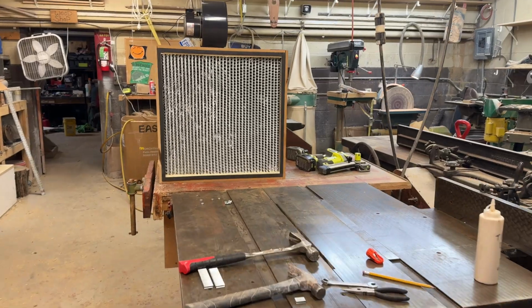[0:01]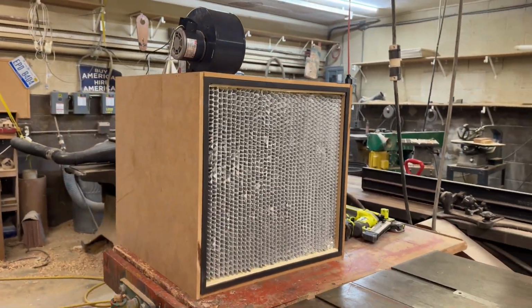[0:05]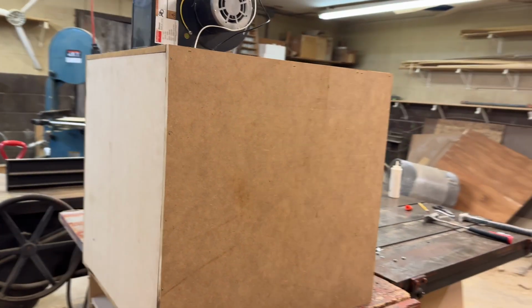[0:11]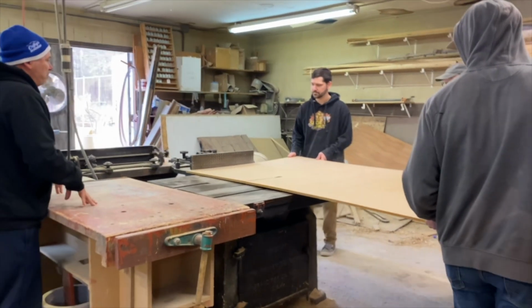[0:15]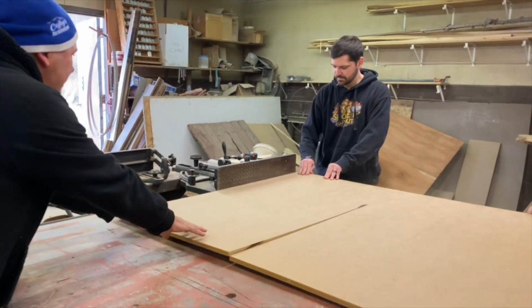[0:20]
In this video, I'm going to show you how to build a laminar flow hood for growing mushrooms. A laminar flow hood is one of the most useful tools you can use in mycology because it prevents contamination of your mushroom cultures.
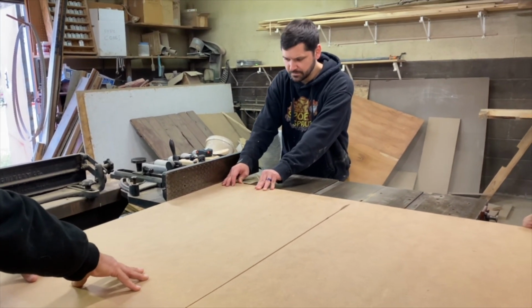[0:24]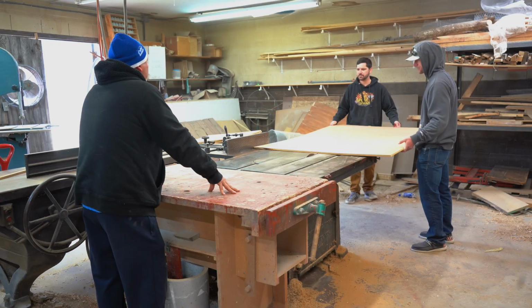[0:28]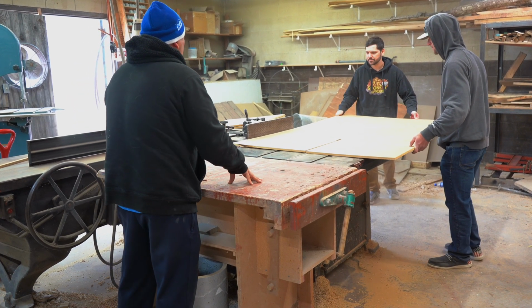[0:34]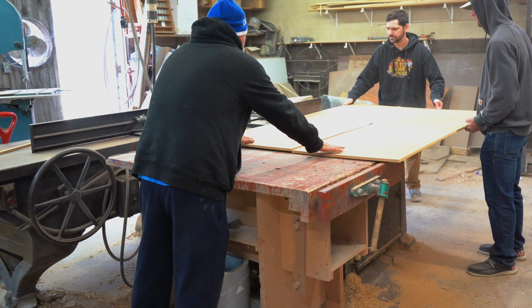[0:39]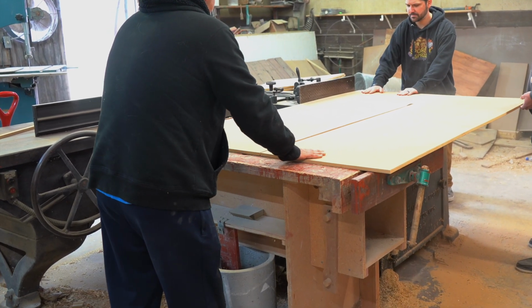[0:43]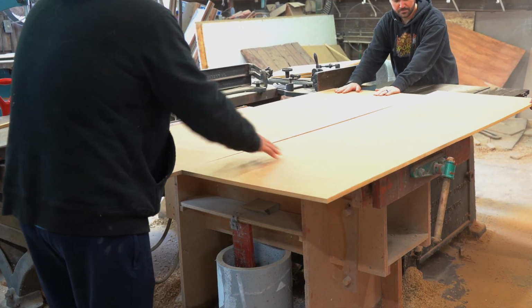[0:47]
The blower motor on top brings air into the box, which is forced through the HEPA filter, creating a stream of sterile air over the working area in front of the flow hood. This laminar flow hood is made up of three main components, which are half-inch sheets of MDF particle board, a HEPA filter, and a compatible blower motor.
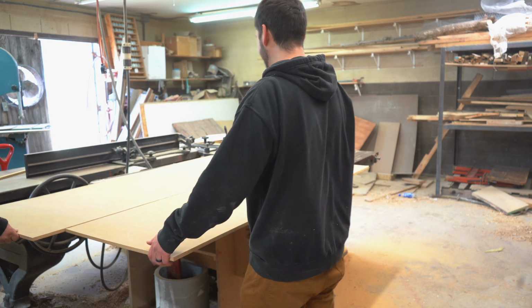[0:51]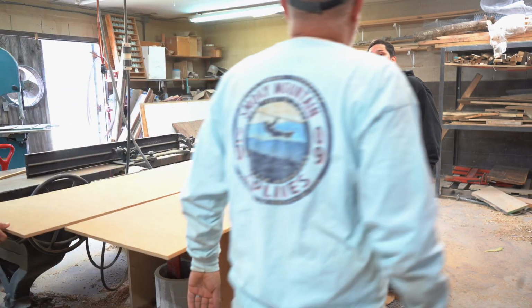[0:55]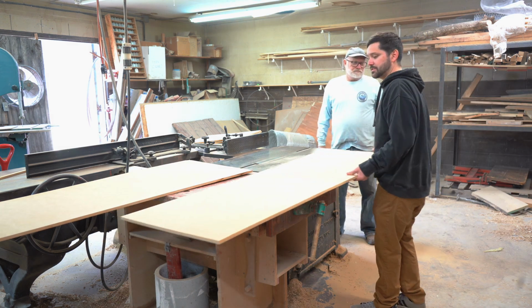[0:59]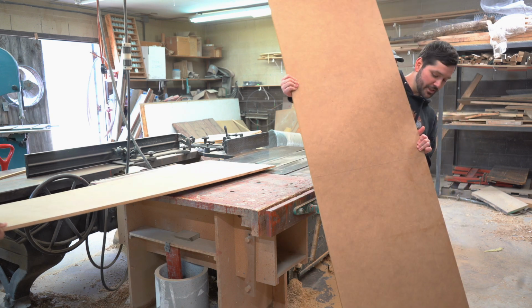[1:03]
Yeah. OSHA would come and give me a... Right. Yeah. I've seen the ones that stop if you put a hot dog there. Yeah, oh yeah. Stop. Yep. Yeah. This is our extra piece here. Yeah. Now you can make whatever you want with this extra.
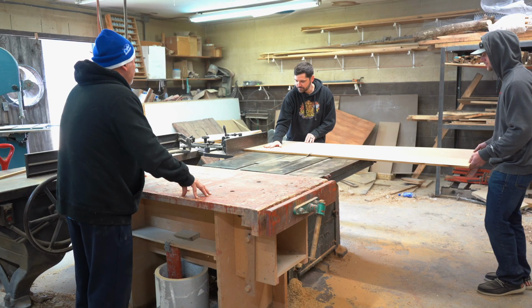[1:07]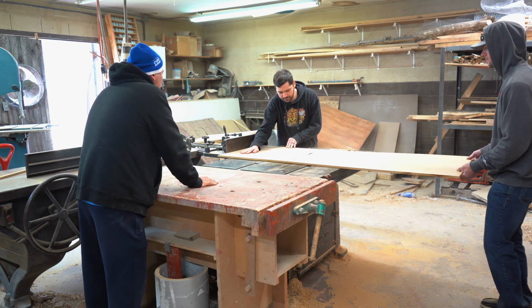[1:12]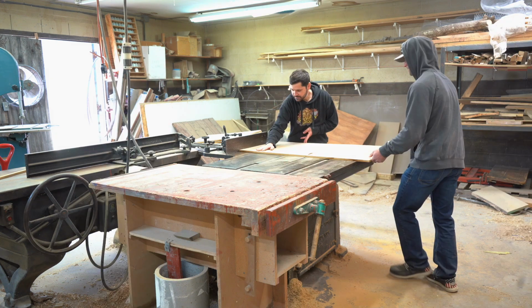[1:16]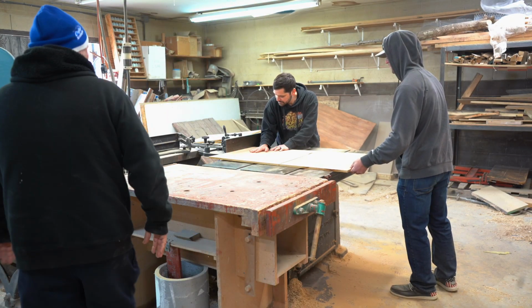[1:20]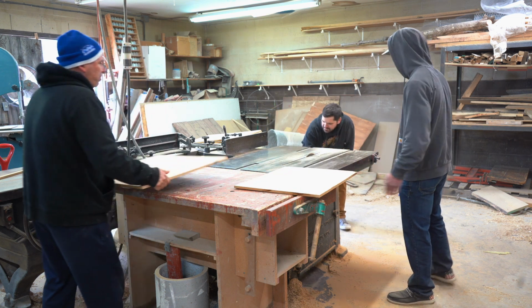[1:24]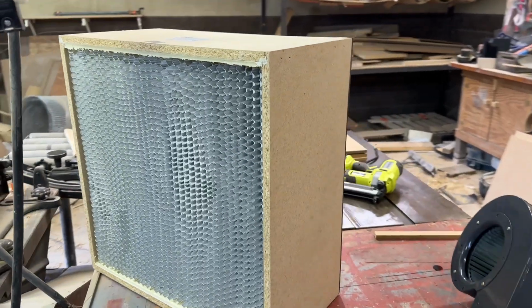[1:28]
You'll need to cut 5 square panels from the MDF, measuring for the two sides. It's the same measurement, which is 25 inches by 25 and a half inches. For the top and bottom piece, they're both the same measurement, which is 25 and a half inches by 24 inches. And then that just leaves the back piece, which is 24 inches by 24 inches.
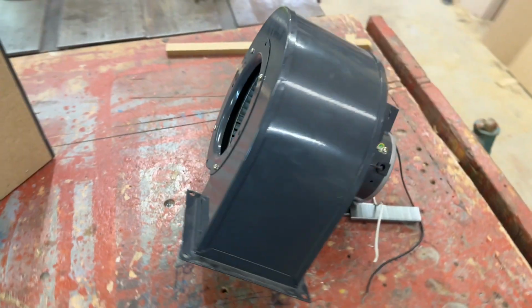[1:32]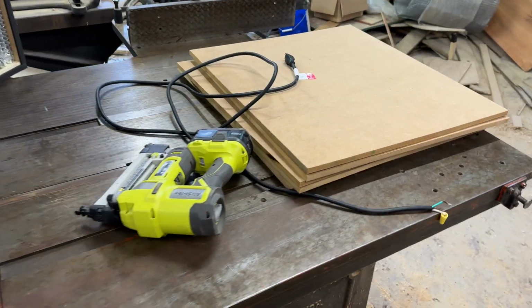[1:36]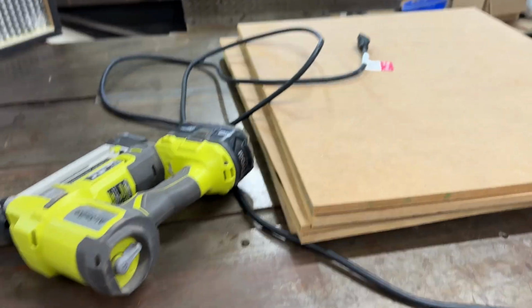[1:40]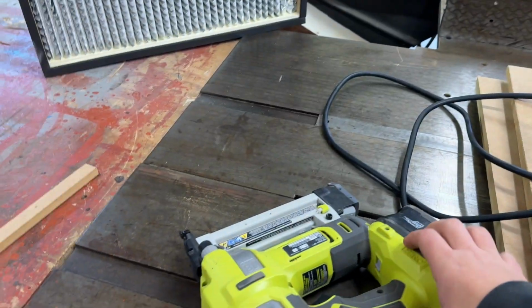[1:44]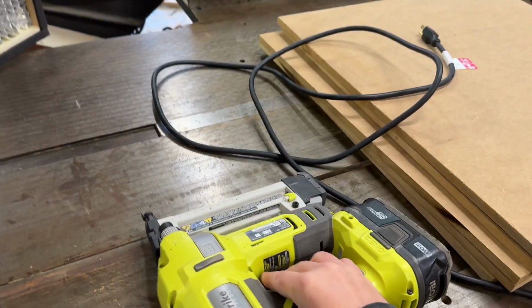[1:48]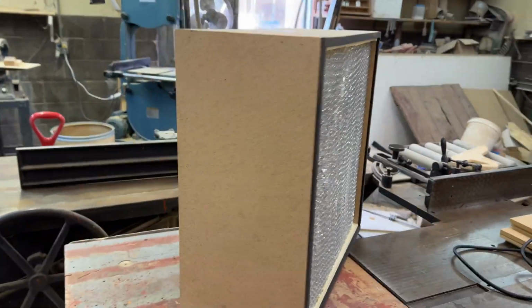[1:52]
I'll leave all the measurements in the description of this video, including the links to the compatible HEPA filter and blower motor. A clean room grade laminar flow hood can cost thousands of dollars, and shipping is usually $300. So making your own flow hood is more affordable, and this build specifically is around $500.
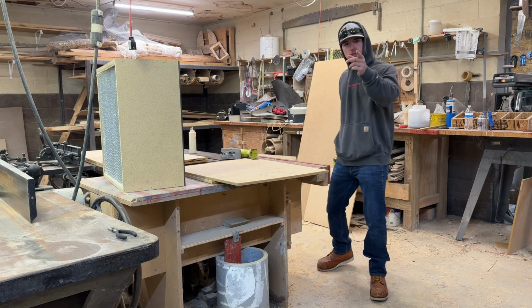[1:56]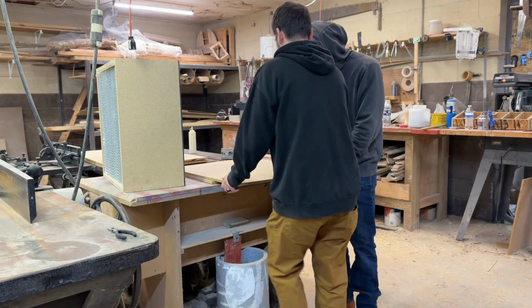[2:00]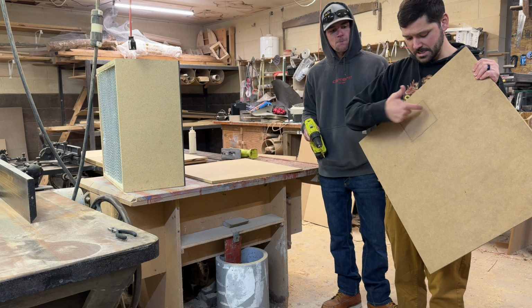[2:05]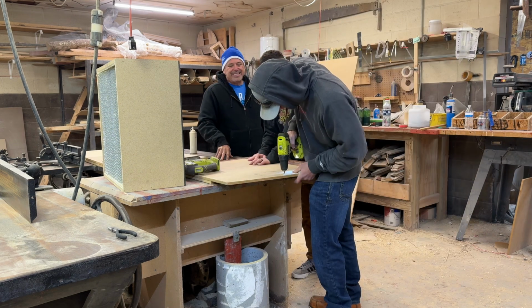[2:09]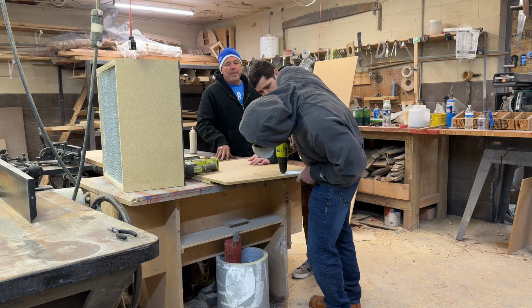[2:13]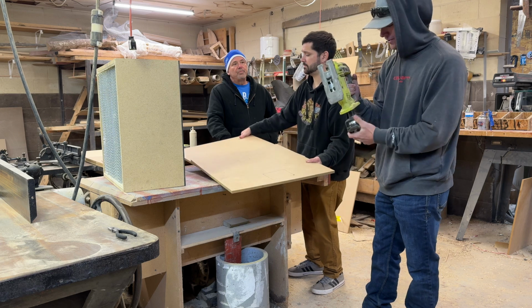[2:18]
All right, guys. So the next step that we're going to be doing here is we're going to cut out this square. So first of all, you're going to make sure this is where the blower motor is going to go. Right here. So we're going to cut this opening out. Okay, so now we're going to be using the jigsaw to go ahead and cut this square open.
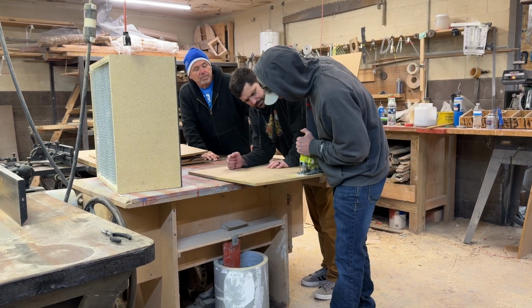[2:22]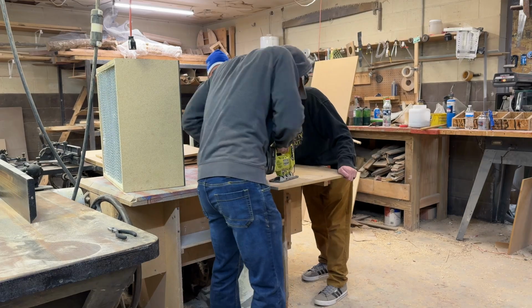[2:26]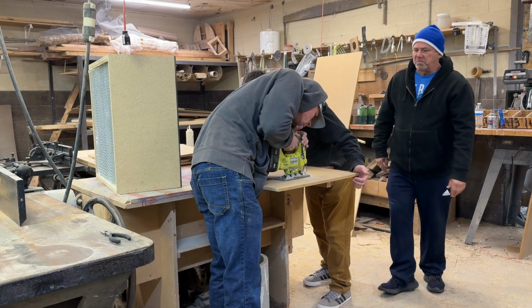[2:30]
I have built this kind of flow hood a few times, and they work amazing for many years without even replacing the filter. The longevity can be increased even more if a pre-filter box is installed around the blower motor on top.
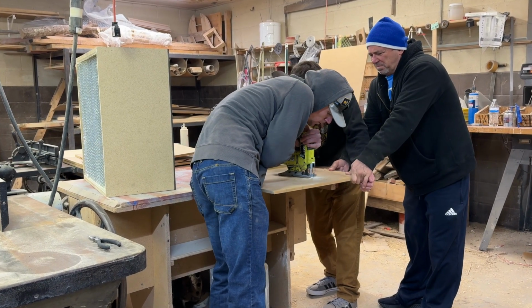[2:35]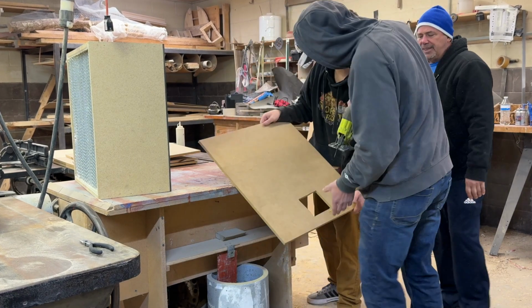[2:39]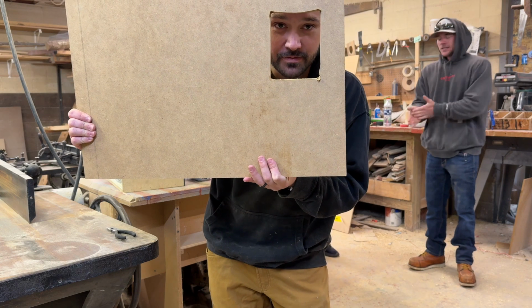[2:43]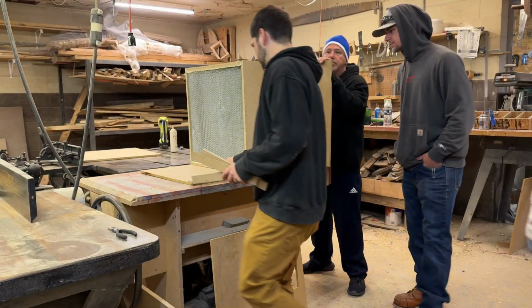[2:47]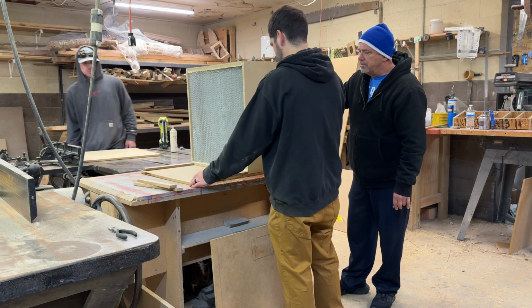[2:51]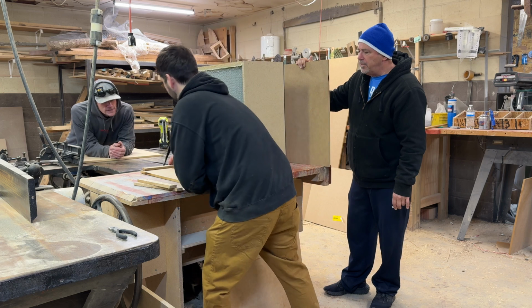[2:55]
All right, what's the next step? We cut it out, folks. One goes right here. Okay, so these shims we're going to put in here so the filter stays in position. So we're putting these shims here.
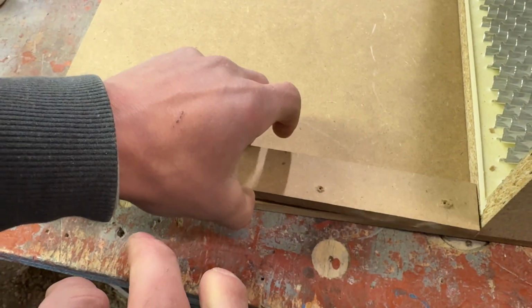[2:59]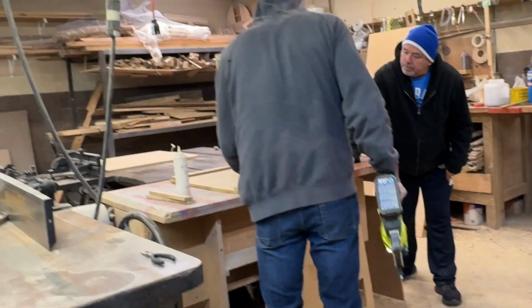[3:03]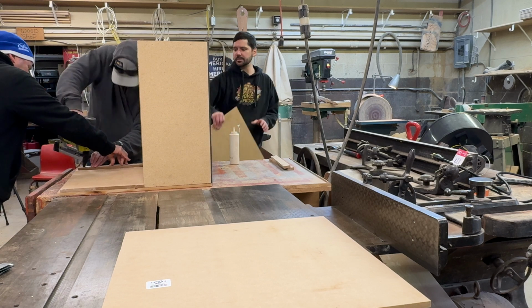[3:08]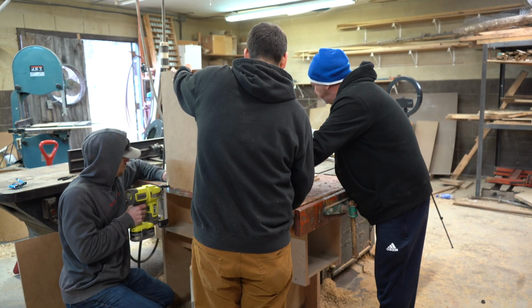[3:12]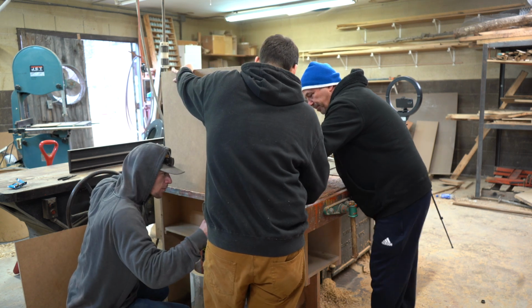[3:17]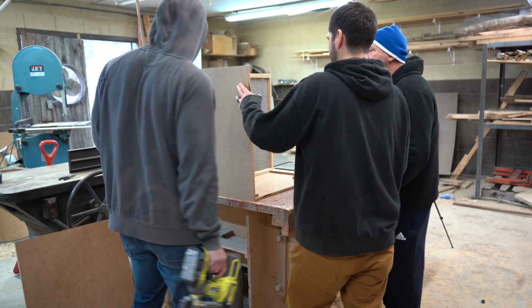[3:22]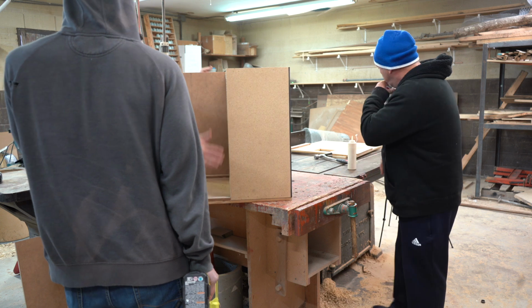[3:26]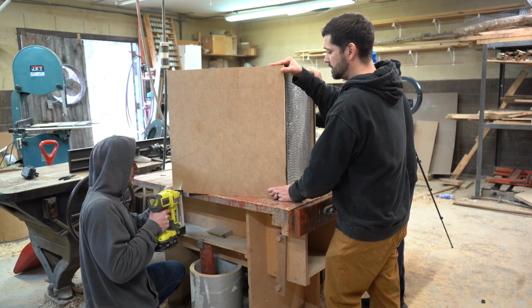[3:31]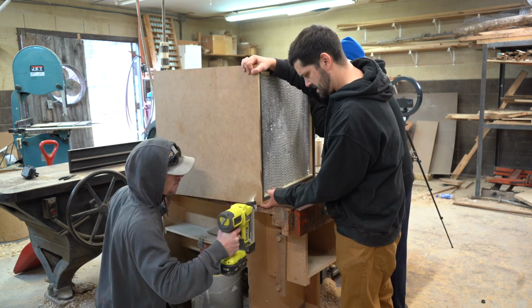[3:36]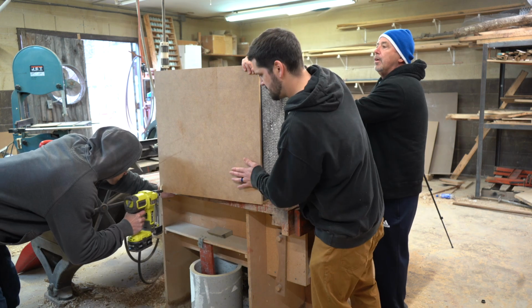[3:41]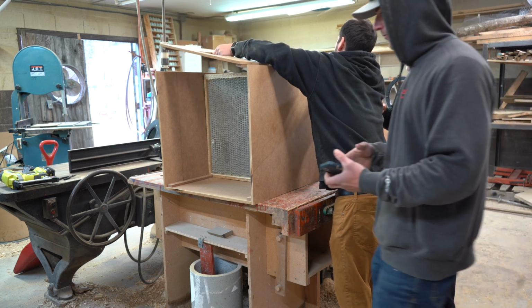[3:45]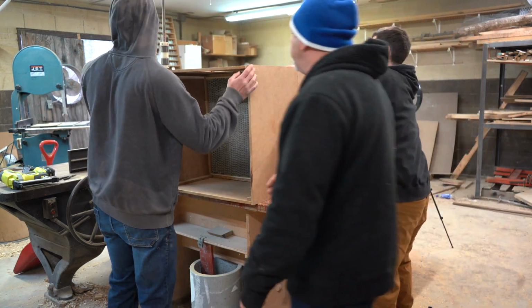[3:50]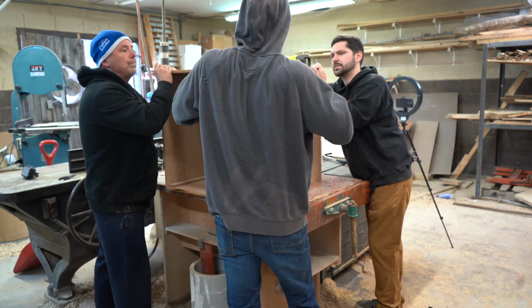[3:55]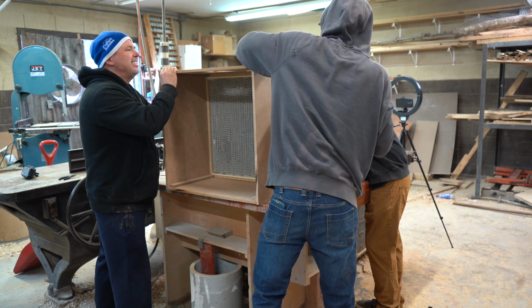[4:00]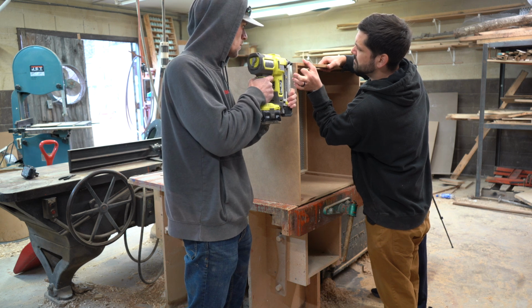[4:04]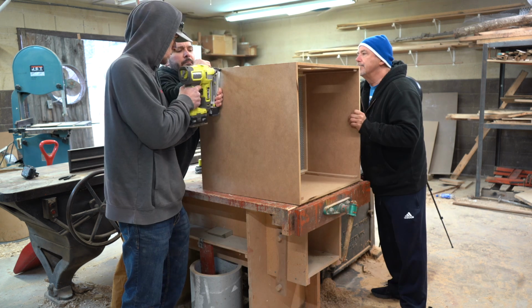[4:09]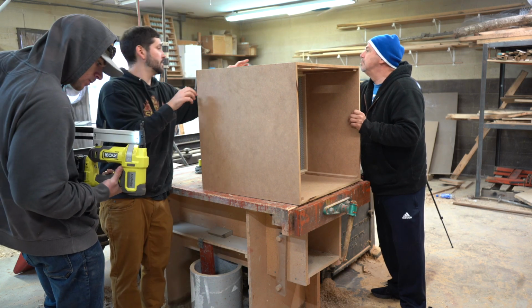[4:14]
After all the pieces are measured and cut out, it's as simple as constructing a box around the HEPA filter. You can use an air nailer or a drill with screws to attach the panels together. Alright, now just spin it around. We'll do this side. And any gaps we'll just have to fill up with some silicone.
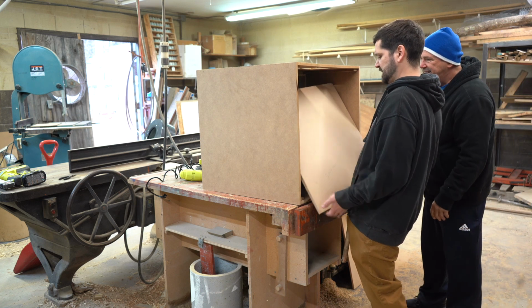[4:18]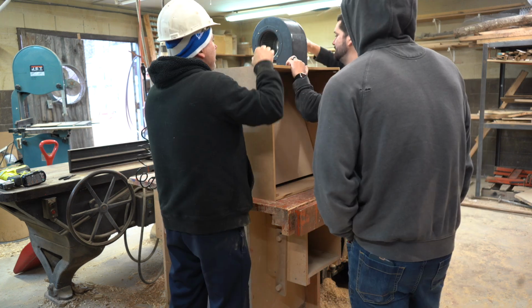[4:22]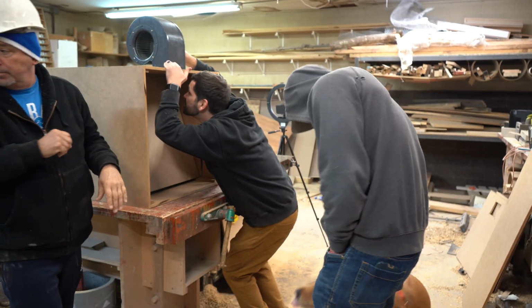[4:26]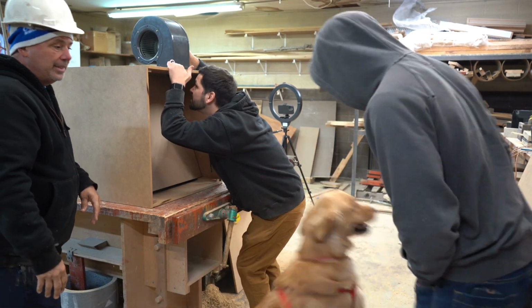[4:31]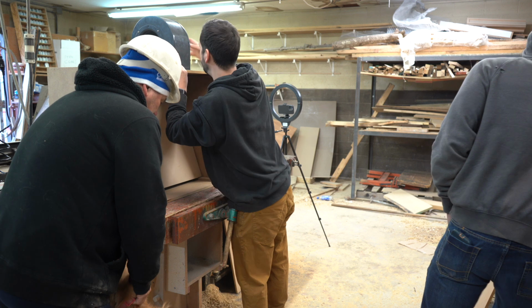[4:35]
Where was she? I don't know. Do you have a pen or something we can mark that with? Yeah. Can you do that, please?
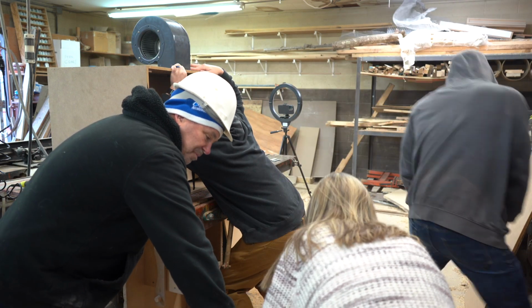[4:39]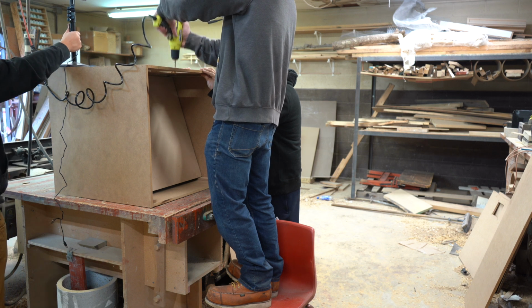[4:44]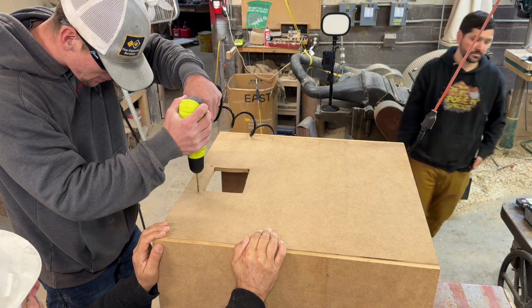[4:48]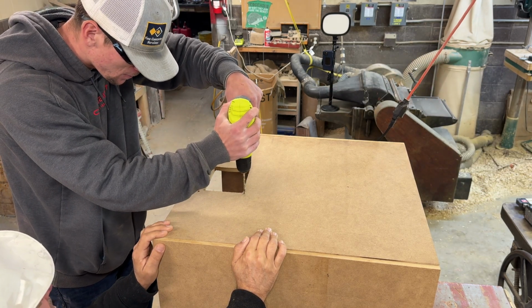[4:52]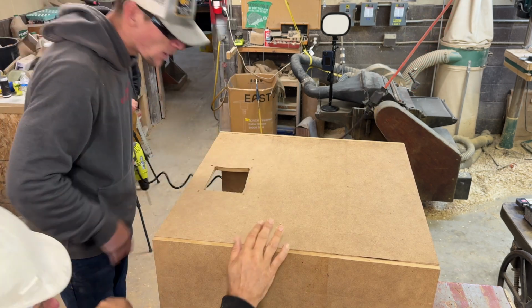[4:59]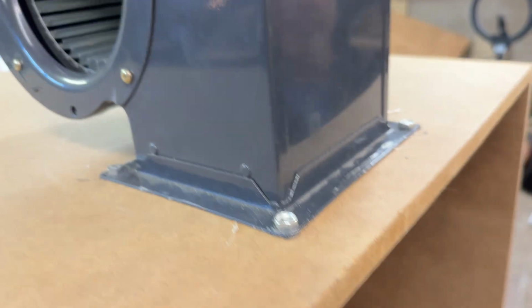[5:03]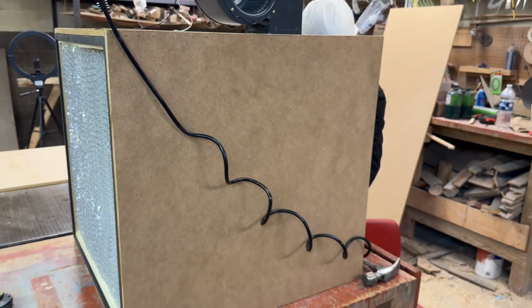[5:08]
Here we're marking and drilling 4 holes around the outside of that rectangle that we cut out earlier, where the blower motor will be held into position by 4 bolts. Okay, you're good to go then. After attaching the blower motor, I recommend running a bead of silicone around the flange to make sure that it's airtight.
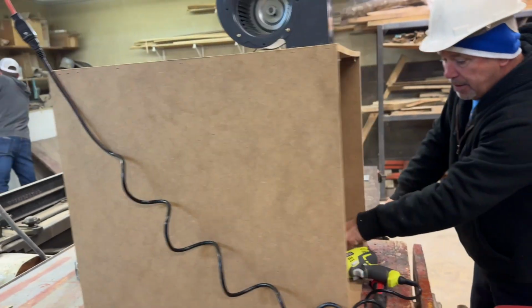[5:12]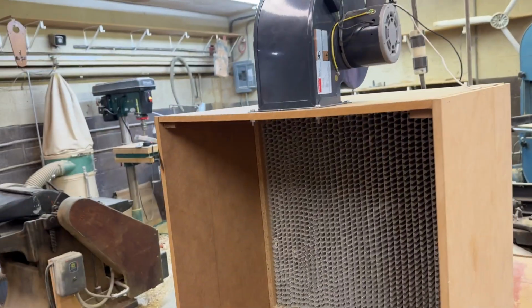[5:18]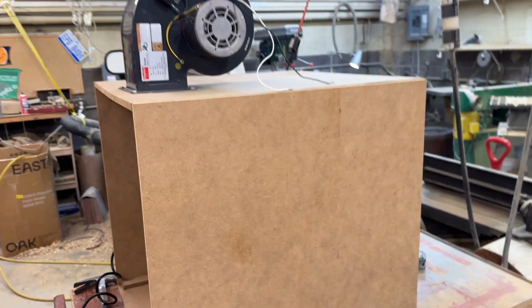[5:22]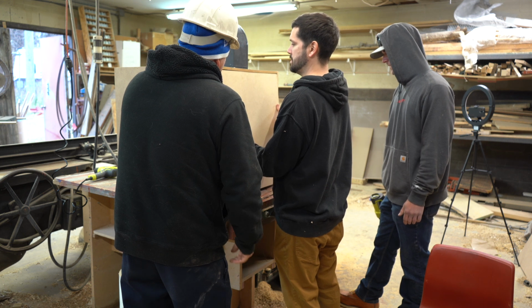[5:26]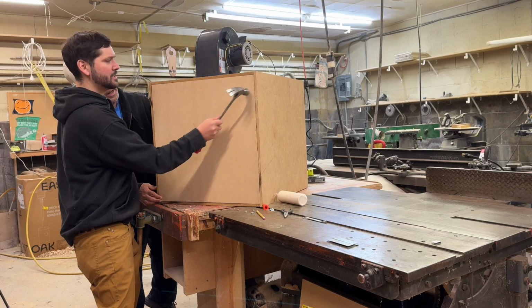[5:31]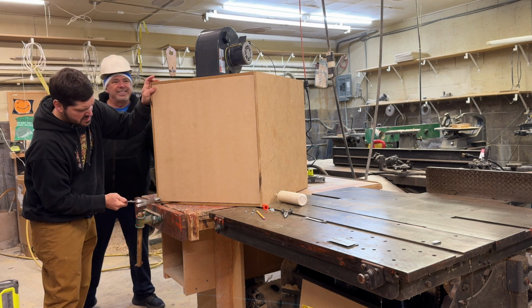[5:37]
We have to put the back on? Yep, now it's time to put the back on. It's just a tight fit. Wow, isn't that tight? That comes in so nice. Fits like a glove.
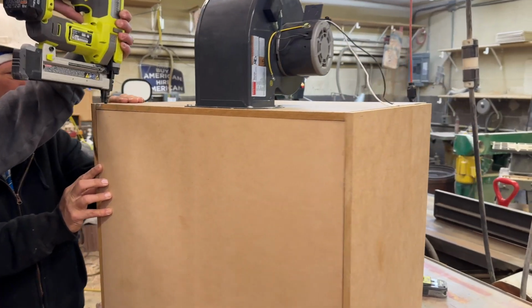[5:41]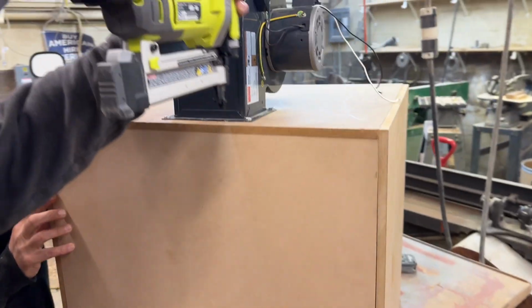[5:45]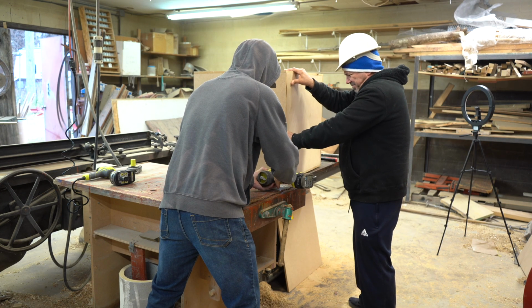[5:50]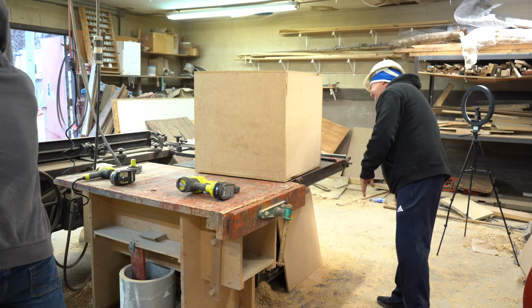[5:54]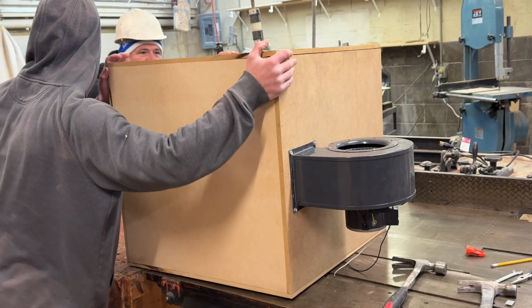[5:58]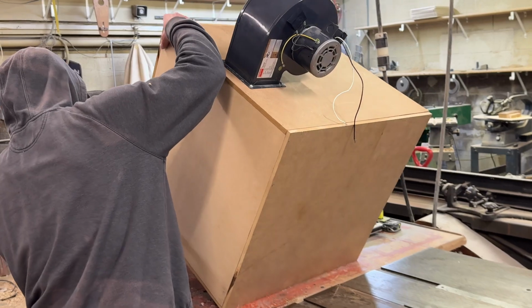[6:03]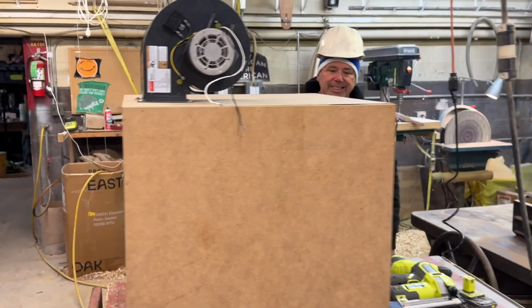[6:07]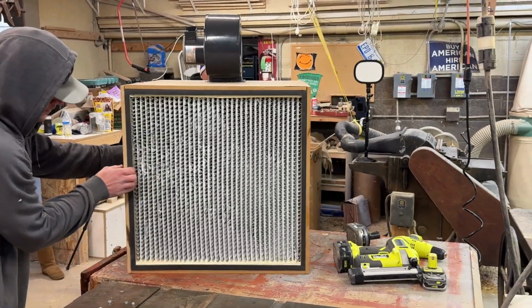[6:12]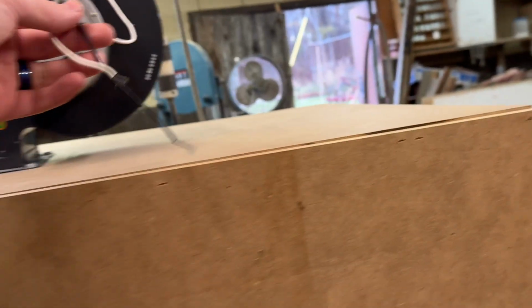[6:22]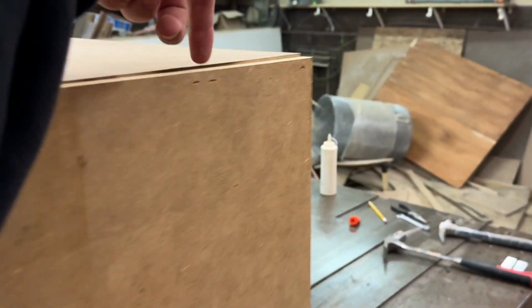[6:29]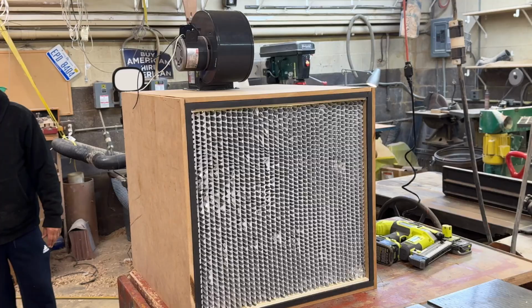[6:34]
After you're done building the flow hood, you have the option of building a small box around the blower motor and attaching a pre-filter for extra protection. You'll have to wire up this blower motor to a 3-pronged power cord. You could also wire it into a switch, which I did on the last laminar flow hood I built. We just put like a light switch on the side of the flow hood that turned it on and off. You should also fill in any gaps with some silicone.
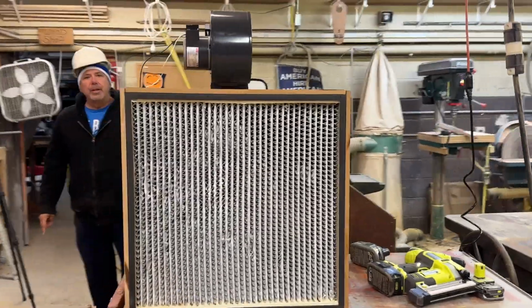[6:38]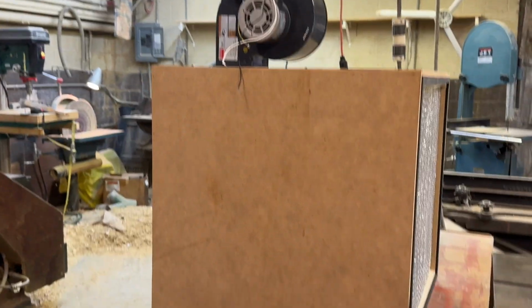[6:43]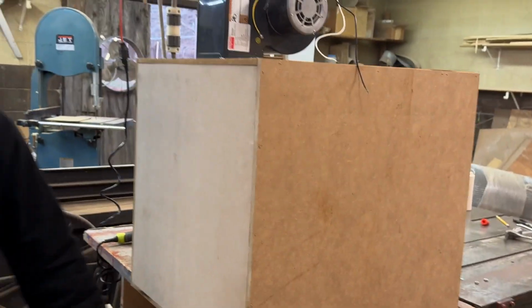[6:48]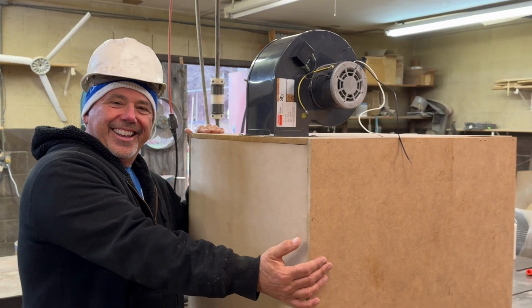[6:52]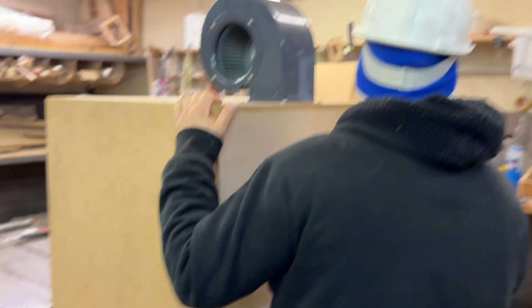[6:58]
That's the thumbnail. He's got his little legs. No, you could do right here. Sand it.